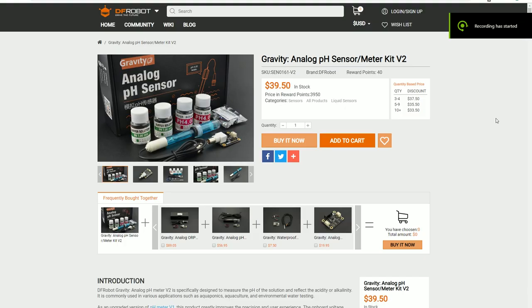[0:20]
Hello YouTube, today we are talking about a pH sensor circuit made by DFRobot. Just for information, they made a first version of that circuit a few years ago, and today they've released version 2. And version 2 is interesting for multiple points. The first thing is that it's more accurate in the readings. It's also easier to calibrate with the sketch provided.
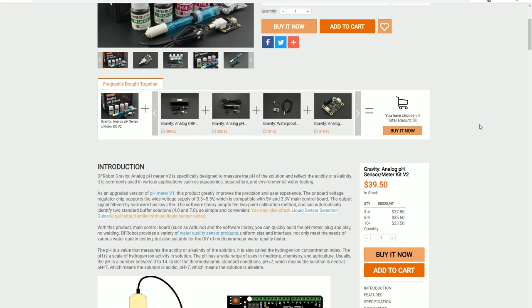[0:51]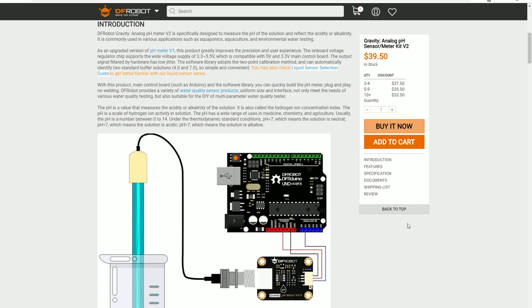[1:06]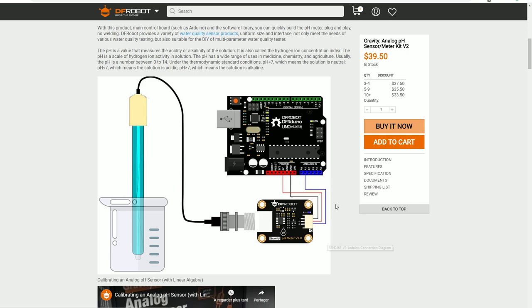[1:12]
And now it's compatible with 5-volt microcontrollers and also 3.3-volt microcontrollers, which is very interesting because more and more of those microcontrollers are becoming 3.3-volt based. And as we can see here, they show how to set it up with a standard setup, which is an Arduino working on 5-volt. You've got the DFRobot circuit and the pH sensor put into a calibration solution.
Now, the thing is, they provide code for that, and the code does not work for platforms such as ESP32. And as it happens, we work a lot on ESP32, so we've modified the library a little bit so it can work with this ESP32, and so that you don't have any issue regarding all the EEPROM part.
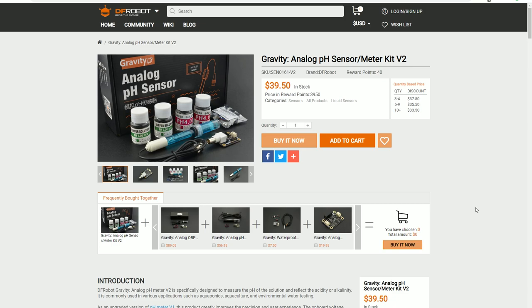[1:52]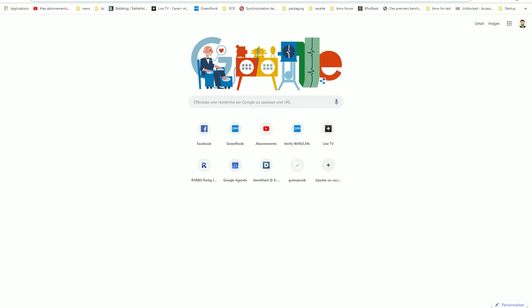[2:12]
So, how do you make it work? Let's assume you already have Arduino IDE and you already have set it up to use it with ESP32. If you don't, you can go on Google and find how to do it. Now, you make this circuit work with an ESP32. So you go on GitHub, that's the first step. You look for GreenPonik, which is us.
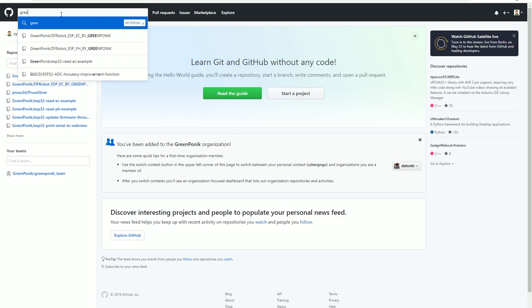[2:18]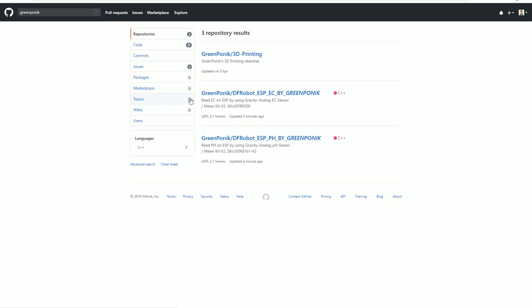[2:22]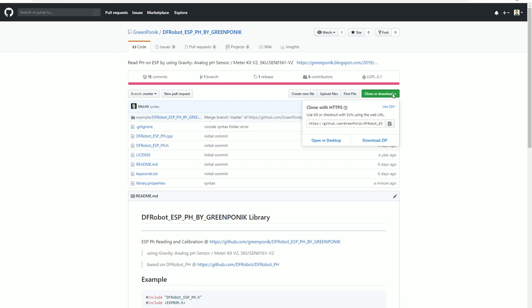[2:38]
And here you will find two libraries. One is for the pH and the other one is for the EC. We'll talk about the EC in another video. Today we'll click on the pH version. You will have to download it. You click download, download zip. So it downloads a zip file where you will have your library and then the example inside it.
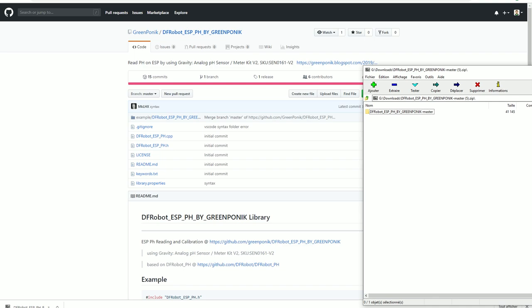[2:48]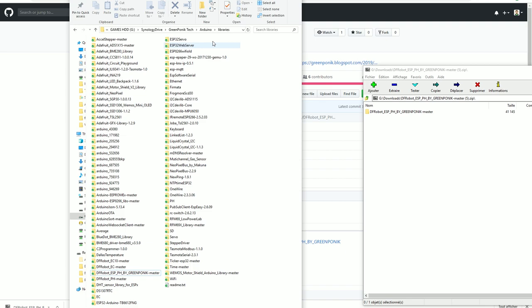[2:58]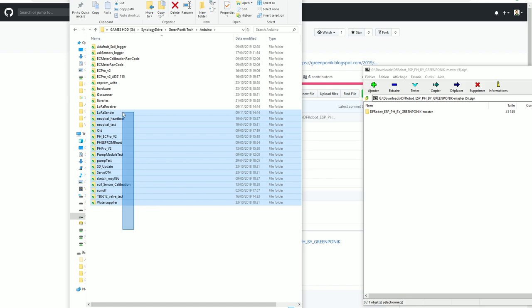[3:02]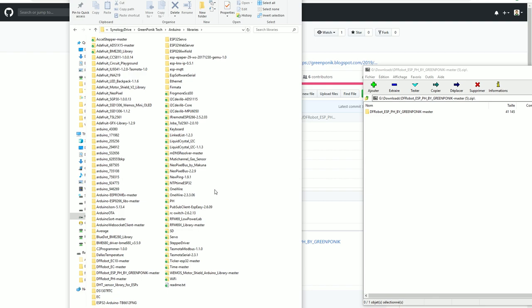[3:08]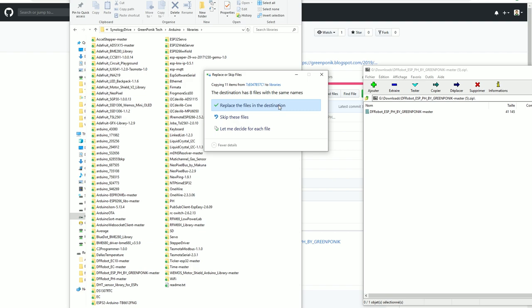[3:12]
So now you will have to install that library. What you do, you go into your library folder. Your library folder will be in your Arduino folder where you have all your sketches, and you have a subfolder there called libraries. So you go there and you just extract all the files. I've done that already, so let's just replace it. It's not a problem. Okay, done.
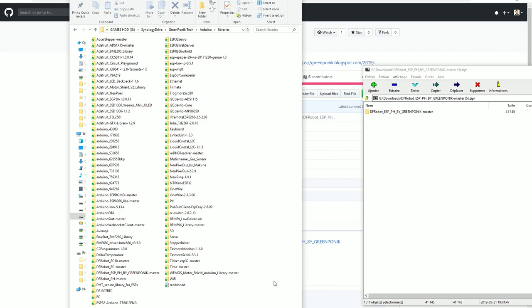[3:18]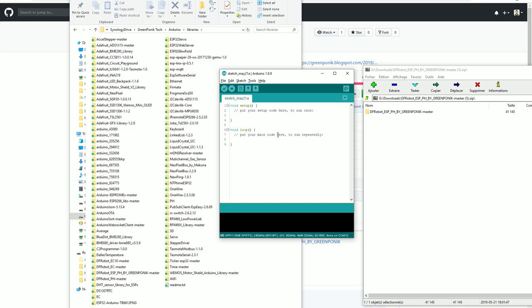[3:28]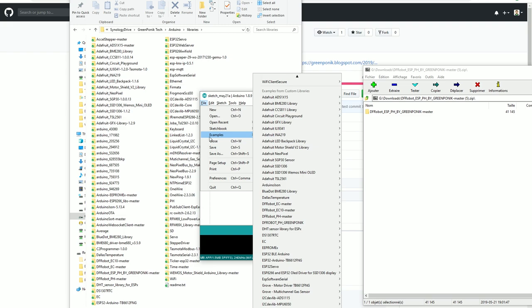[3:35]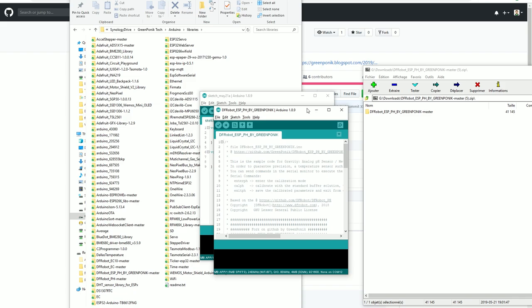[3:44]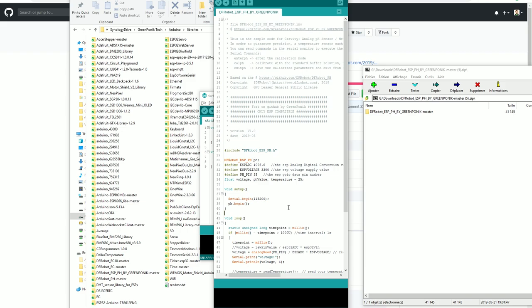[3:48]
It's here. So now you have to open Arduino IDE. I've got a session which is already open here, a blank one. You go in File, Examples, and you will try to find DFRobot ESP PH BY GREENPONIK. Here is an example, you click on the example, and here is your sketch. It's very short, and it will work. And now I have to show you how to set up everything
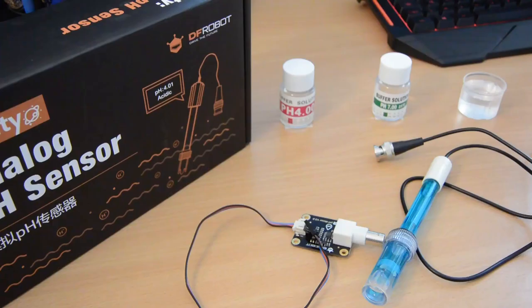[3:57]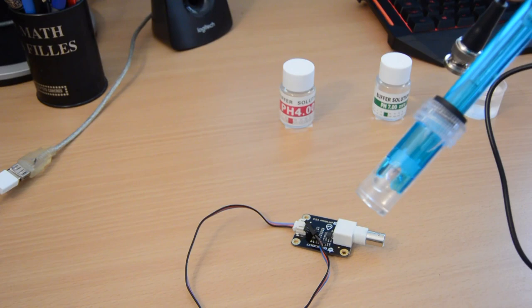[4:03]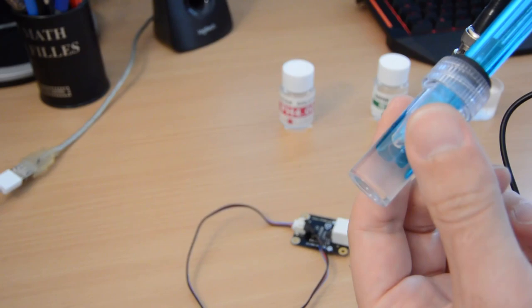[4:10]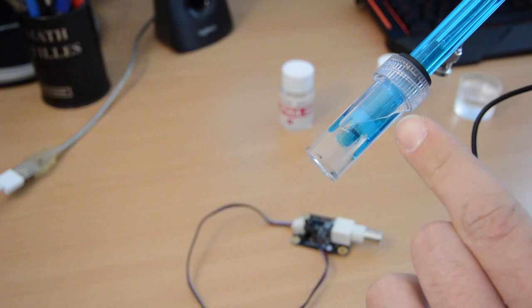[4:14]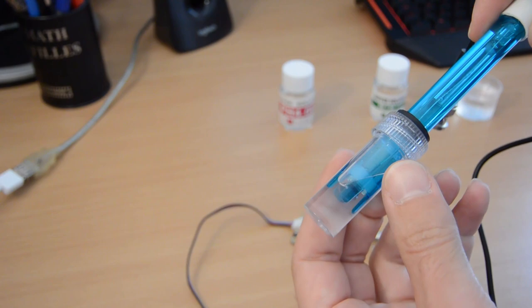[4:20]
regarding the wiring, etc. So you've got your typical kit, you receive this box. And this box contains the pH sensor, which is within a solution right here. It's very important that that probe is always within this solution and that it never gets dry, like never. You never want it to be dry because it will kill the probe and it will be useless.
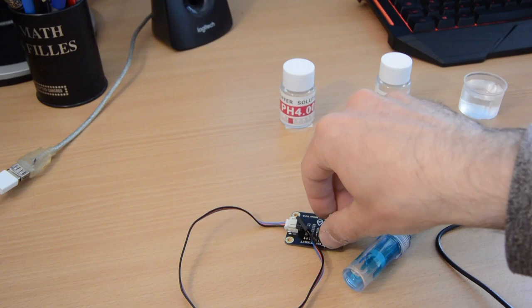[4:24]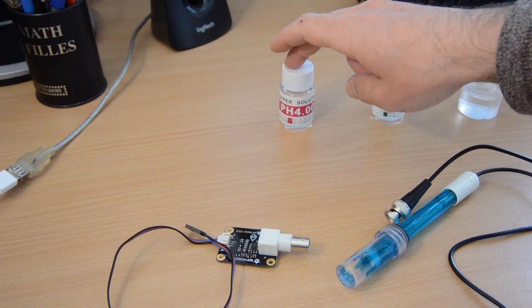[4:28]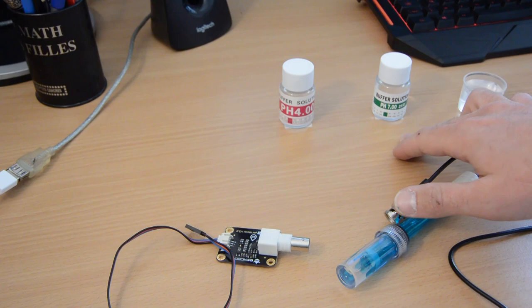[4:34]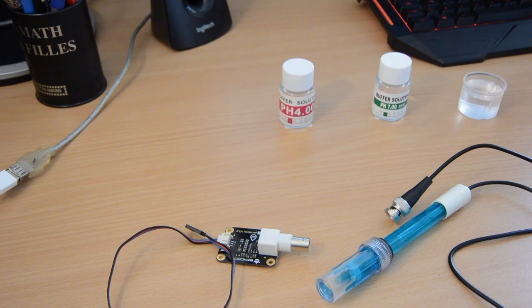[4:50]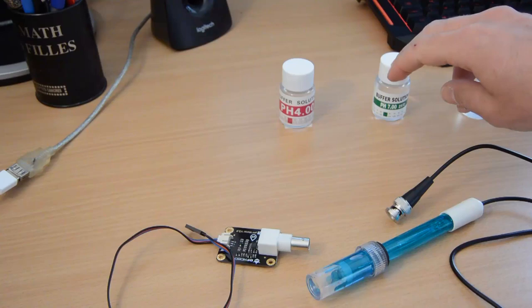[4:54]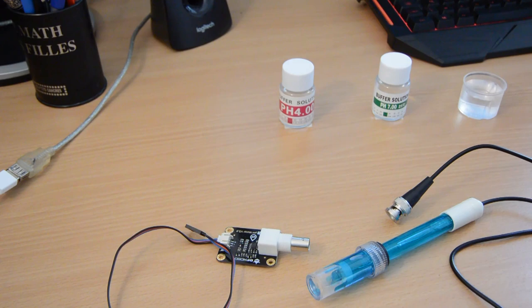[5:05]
You have your pH circuit version 2. You've got your two standard calibration solutions. One is pH 4, one is pH 7, and what I've added here is a cleaning solution for the pH probe. You want to clean it properly when you change your solution so that your measurements are accurate. Quick tip for people using this kind of probe with this kind of solution: a good idea is to use tape like this. It's double-sided tape so that your bottles don't move, so when you put the sensor in you don't have a mess around that will ruin your desk entirely and make you yell for hours.
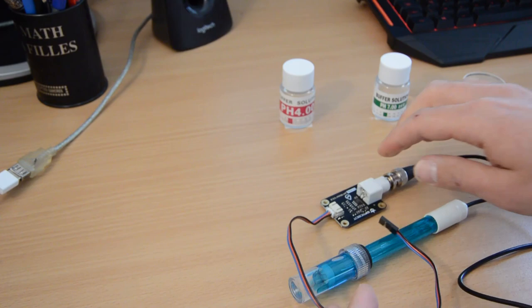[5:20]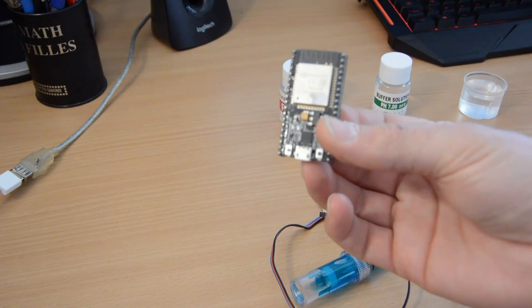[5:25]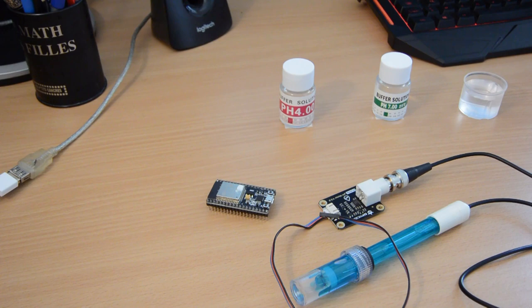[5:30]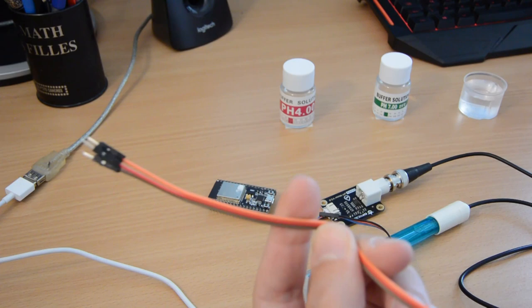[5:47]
So now it's time to plug this in. You plug your sensor to your circuit, and you will need also a very nice ESP32. This one is an old one, so I hope it still works, but I think so. And you will need a power supply in the form of your micro USB cable. And to plug the ESP to the pH circuit, you need some DuPont cables, such as these ones. You know, the ones you learn to love and hate at the same time.
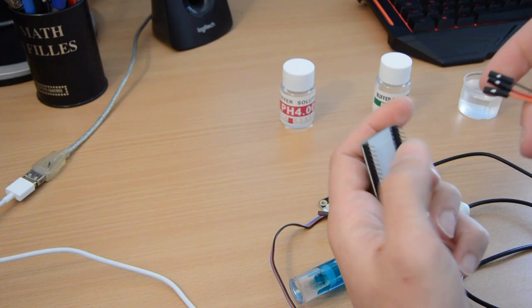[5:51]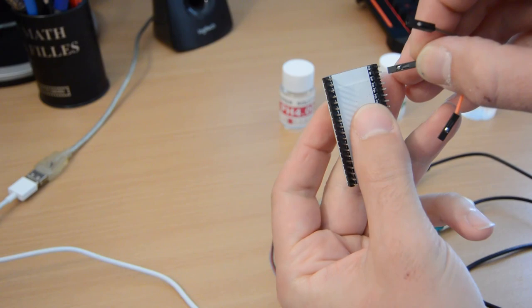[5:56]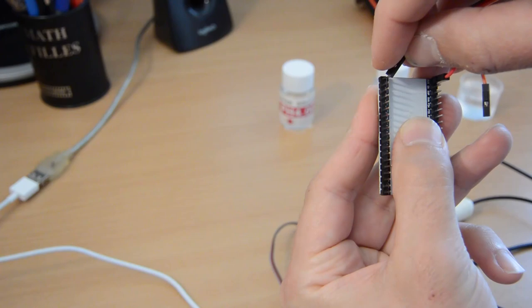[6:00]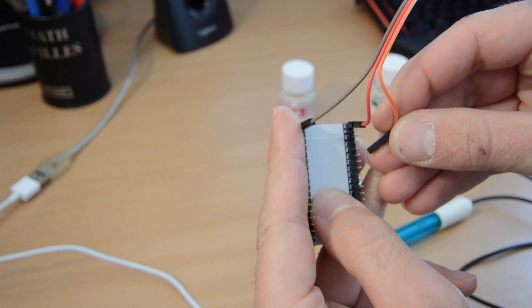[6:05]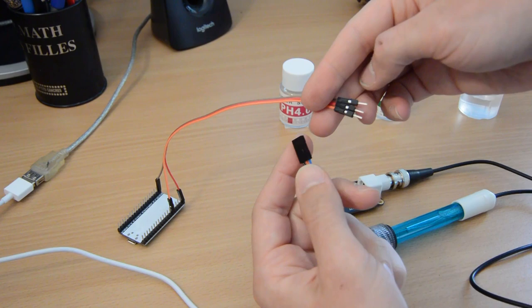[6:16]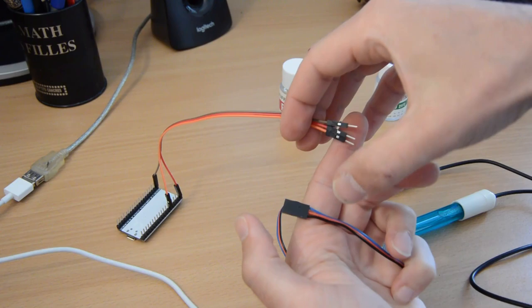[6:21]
So, on the ESP side, you plug it. I hope that you will see enough. But on this shot, your ground is on the top on the other side. And by default, the code tells you to plug your data on 35, which is this one, right there. So you do the same thing on the circuit connector side of things. So I've got minus, plus, data, like this.
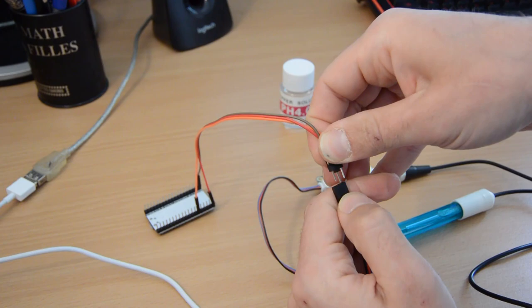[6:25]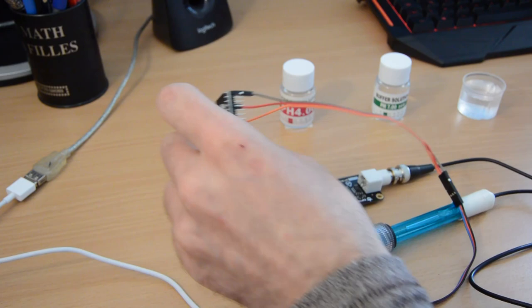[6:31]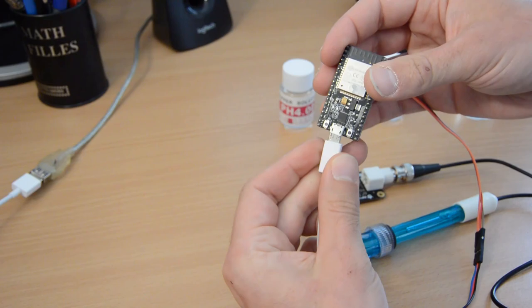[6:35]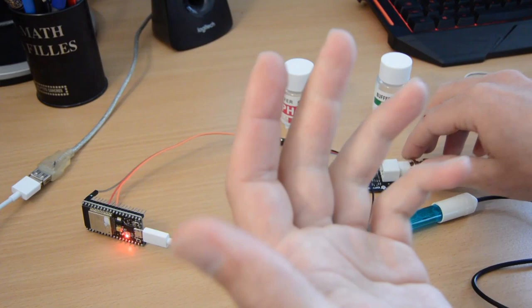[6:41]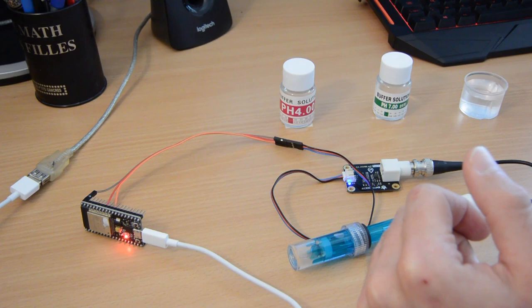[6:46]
Bam, three in a row. And now you can plug your ESP to your PC. Okay, we got a light here, got a light here. Seems all good, right? So, on the PC, you will have to upload your sketch.
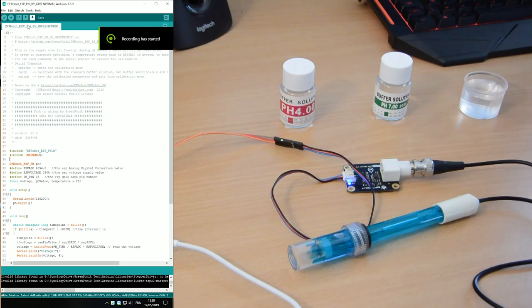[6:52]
So to upload your sketch, you go back to the Arduino IDE. And on the Arduino IDE, you will have to go in Tools. You have to select the proper board that you're using. For us, it's ESP32 dev module, and you have to choose the right COM port. That's 12 here. So let's go. Let's upload the thing.
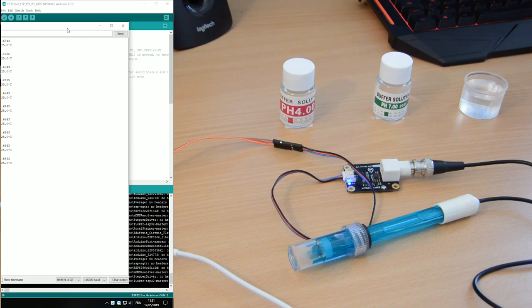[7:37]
So here it is. Done uploading. Now you can open the serial monitor. So it's important that it's set on 115200 baud, so that it works with our sketch. Now you take the cap off.
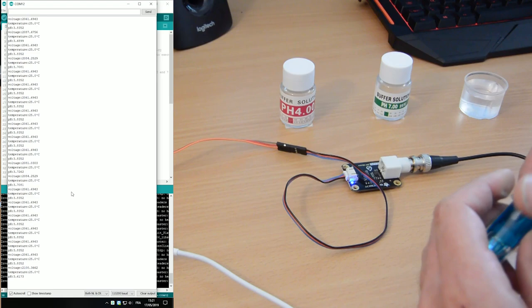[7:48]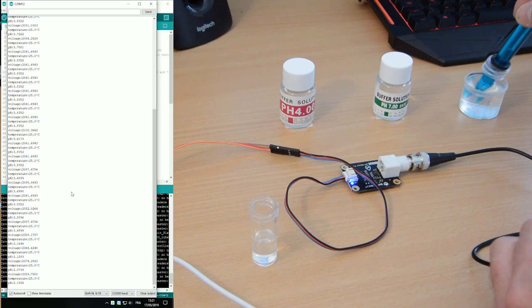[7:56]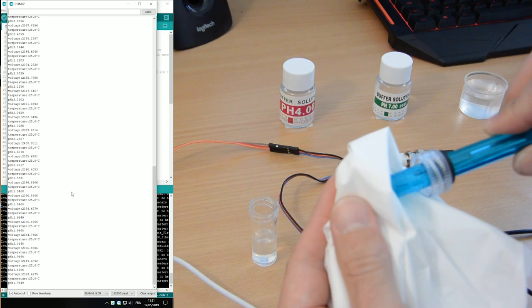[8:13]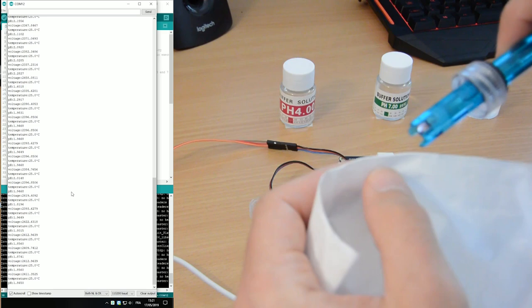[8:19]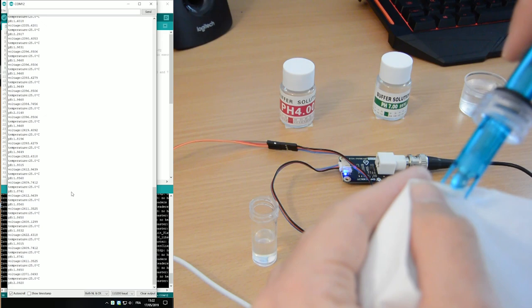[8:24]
Okay, you clean your probe like that. Very gently. This thing is very fragile. You don't want to break it. You don't want to touch it directly. So what I do is I take a little tissue like that. I clean it gently. And I try to put some tissue in there to get the extra amount of solution. But never force. Never put force on the thing. So that should be okay.
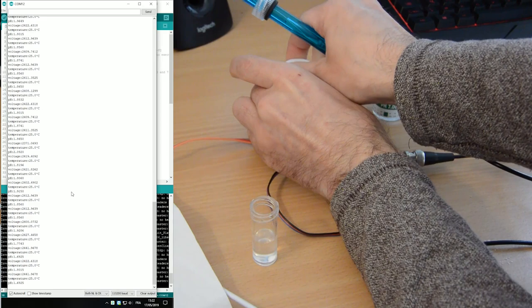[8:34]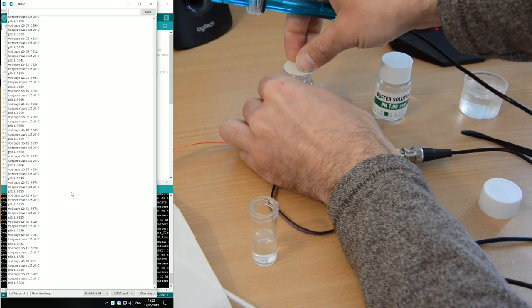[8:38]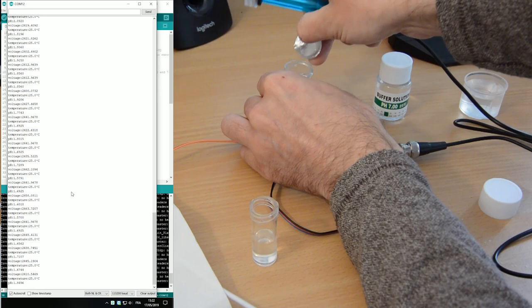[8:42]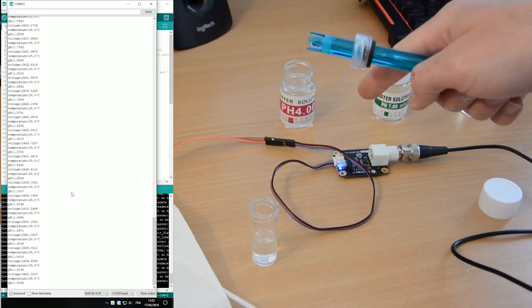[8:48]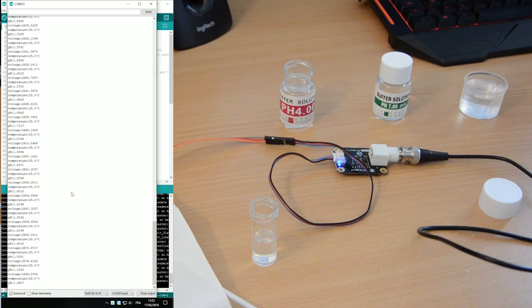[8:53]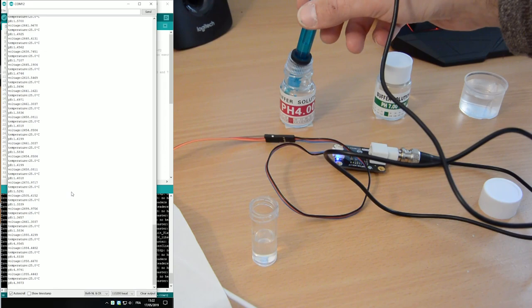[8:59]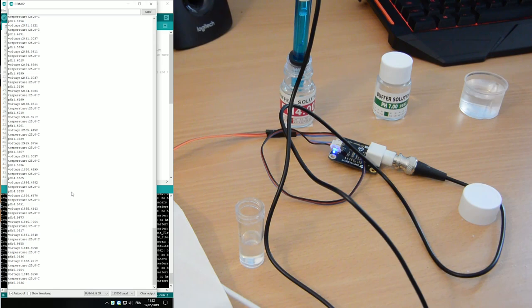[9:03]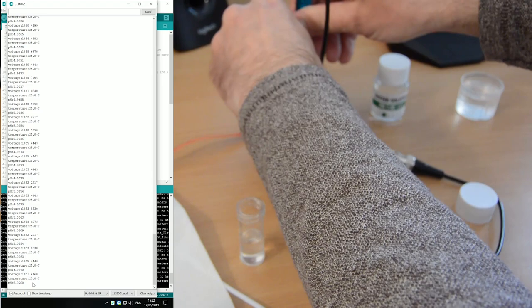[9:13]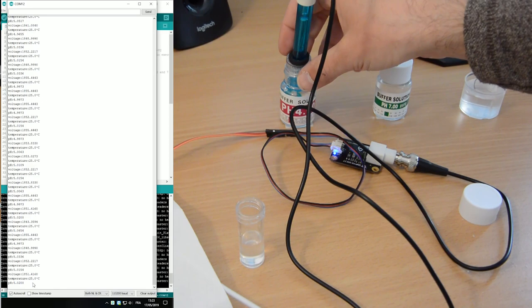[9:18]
I put it in my pH 4 solution. So it's brand new. This one is new, still have the cap on it. Important fact also, when you use a solution like that, you use it only once, because after that it will be spoiled. So here is pH 4. So now we have to check the reading on the other side. So here we are in our sketch, and it doesn't read 4 for the moment. So let's wait a bit so it stabilizes. So it reads nearly 5.
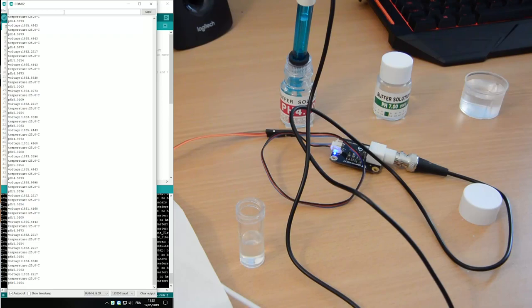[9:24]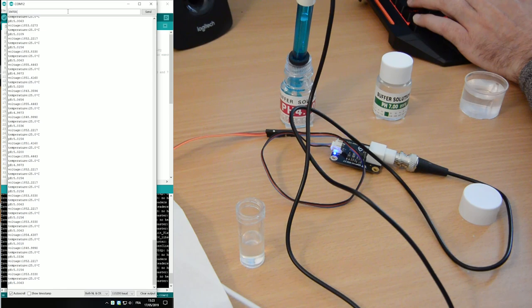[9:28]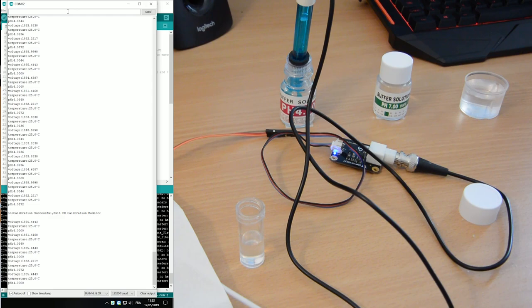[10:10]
Now what you have to do is to put a command right here. You have to type enter pH. It goes into calibration. It asks you to put your pH probe into a solution between either 4 or 7. Here it's 4. Type cal pH when the reading is stable enough. It says, okay, your buffer solution is 4. Yeah, it's right. And now it's calibrated to 4. You can see your reading are pointing to 4. So you type exit pH. Calibration successful, exit pH calibration mode. So now your pH is calibrated for one solution.
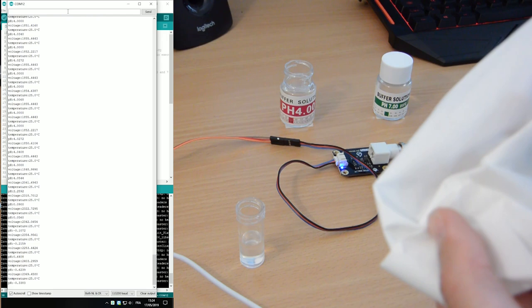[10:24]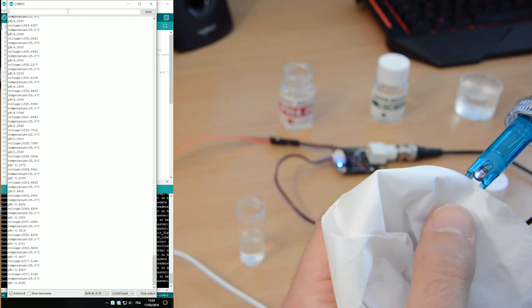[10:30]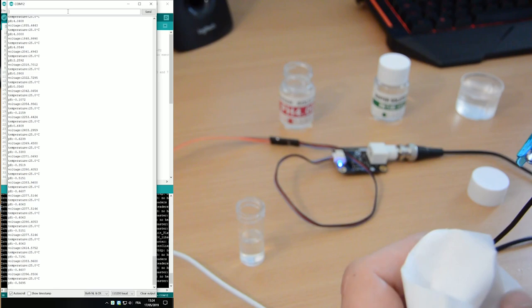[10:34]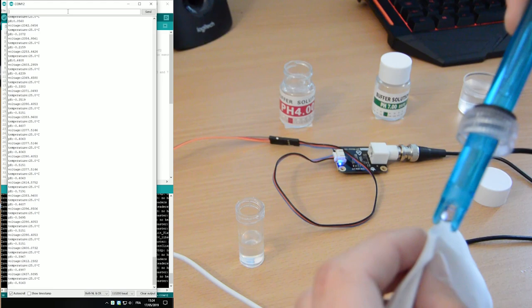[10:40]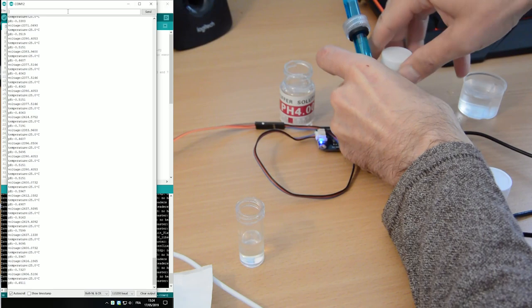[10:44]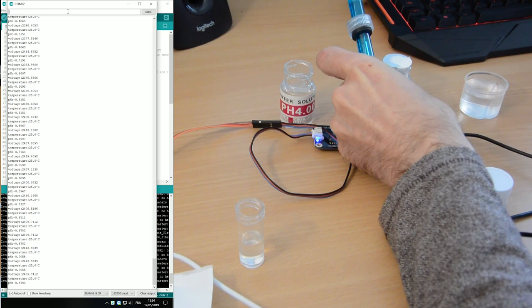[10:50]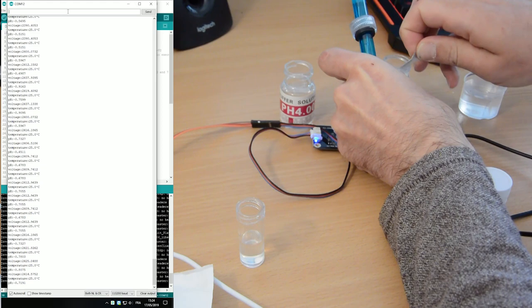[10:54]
Now you have to go to the next solution. So same thing, take it out, clean it, gently dry the thing and do not make any mistake. Oh, you will be sorry. DFRobot will be very happy, but you will be sorry. Okay, now I open the second bottle. This one is new also, so I have to take the cap off. Quick reminder for the next video, do that before you record the video. Okay, probe is in.
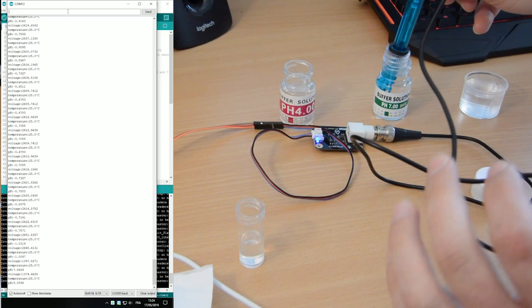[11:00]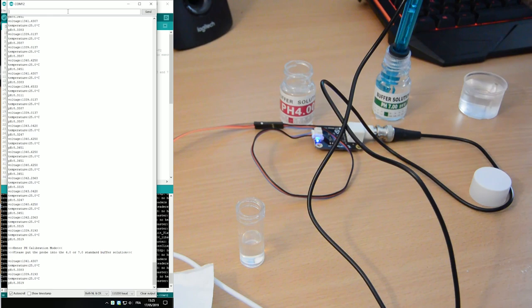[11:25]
Stirring. Now it says 8.35, 8.30, 8.35. It seems to be stable enough. So now we do the same thing. Enter pH. You wait for it to be stable and you type cal pH. So now it's calibrated to pH 7 solution. So you've calibrated it for two solutions, which means that within those kind of ranges, your reading will be very accurate. Now it's time to type exit pH. And that's it. Now your pH reads pH 7.
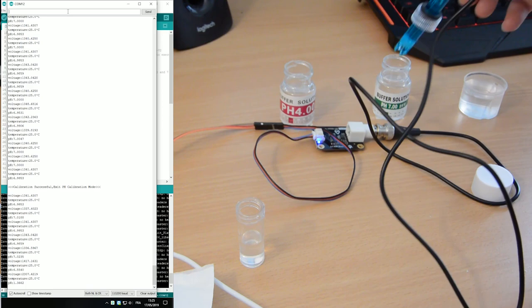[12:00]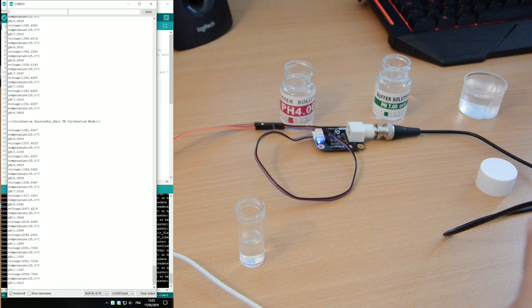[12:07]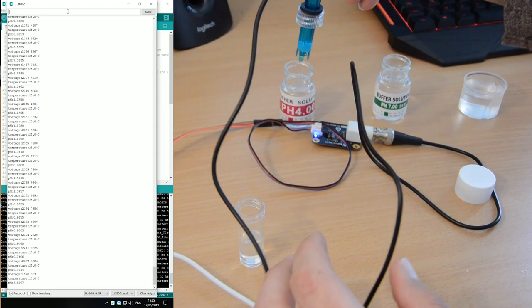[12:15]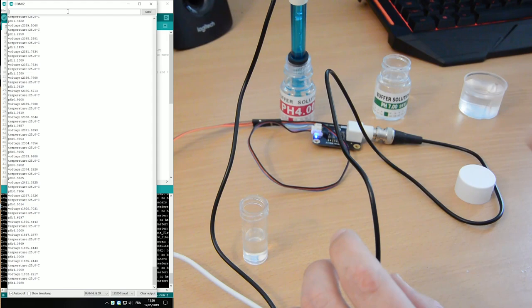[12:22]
If I clean it again, I'm going quickly because I got the habit of this, but be careful. Okay, and I go back to pH 4. You see on the sketch, it reads pH 4. So now everything is calibrated and everything will be registered in the ESP32 EEPROM, and the next time you will use it, it will use the same calibration information. So bear in mind that you have to calibrate those sensors every week or so, depending on your use. It's always better to calibrate it more often than never.